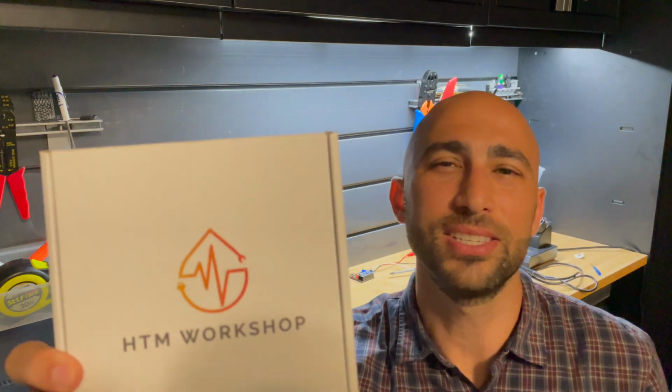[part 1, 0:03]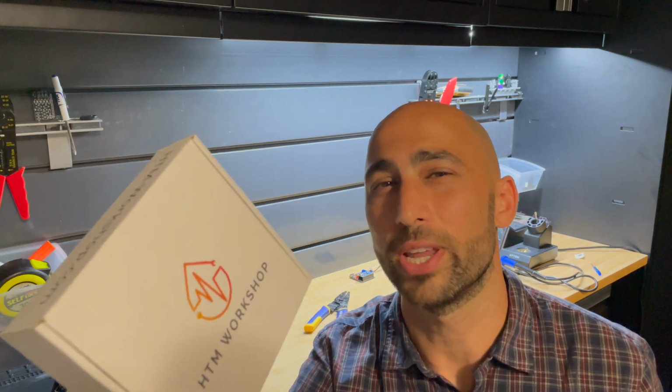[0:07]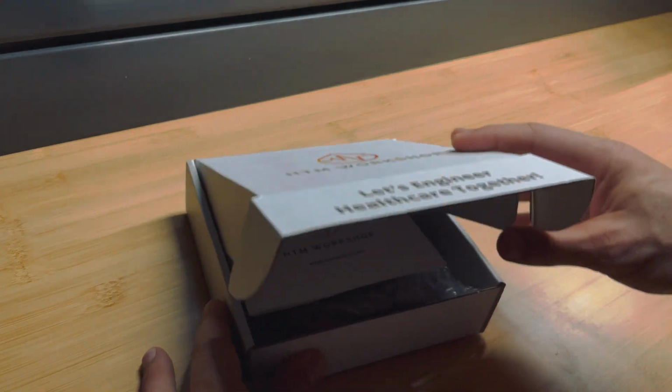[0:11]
Now in this video, we're going to go over what's inside your ECG simulator kit.
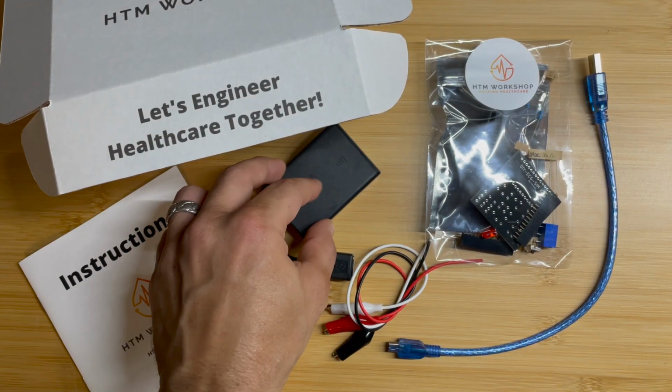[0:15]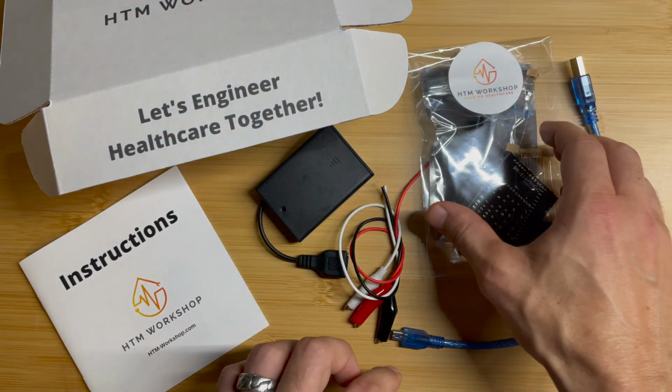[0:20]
Let's open this bad boy up and see what's inside. We have instructions, a portable USB power source, our alligator leads, a USB cable, and then we have the components to assemble our ECG simulator.
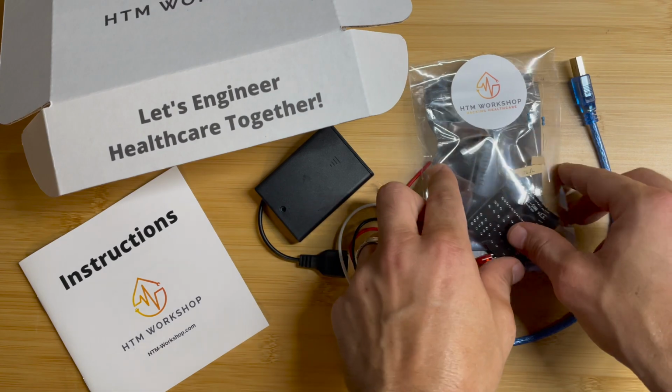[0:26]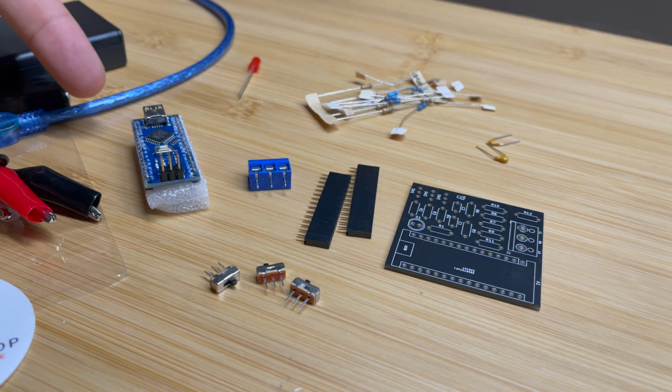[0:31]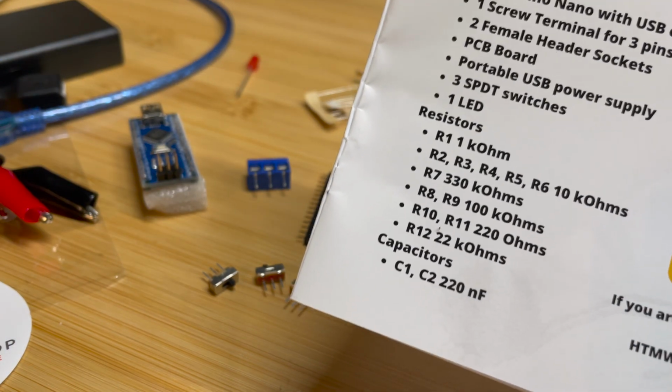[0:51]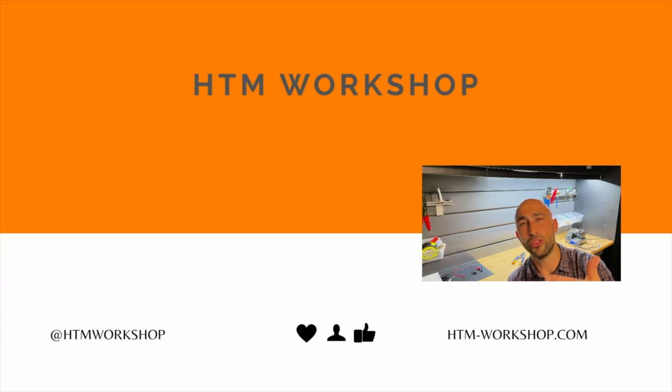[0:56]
Now let's take a closer look at the components inside our kit. Inside, you're going to find an Arduino Nano, one screw terminal for 3 pins, 2 female header sockets, your PCB board, your SPDT switches, 1 LED, all your resistors, and 2 220 nanofarad capacitors. Make sure you have all the resistors listed in your instructions. Make sure to check out our other video on how to assemble your ECG simulator.
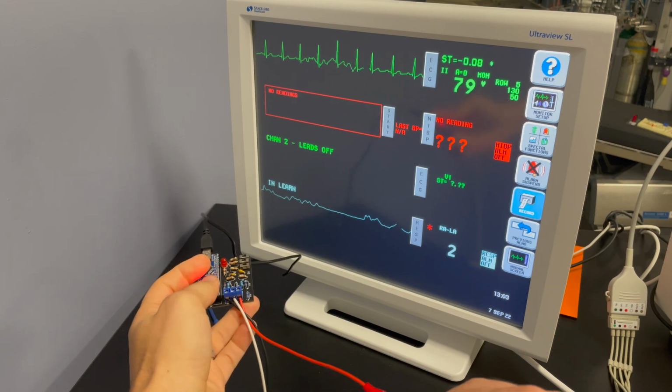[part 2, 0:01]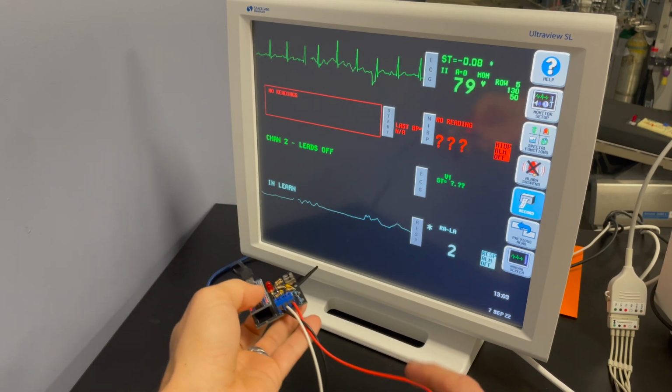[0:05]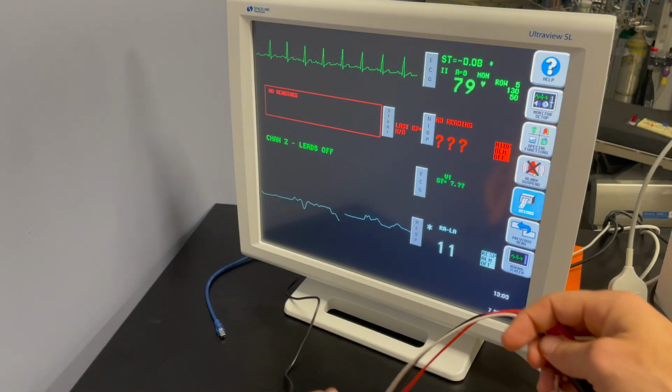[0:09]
Okay, assuming you've already installed and assembled your ECG simulator, and if you haven't, check the video out over here. But assuming you already did that, let's go ahead and talk about some of the things you can do with your ECG simulator. Right now we're generating a simple, approximately 80 beats per minute ECG waveform.
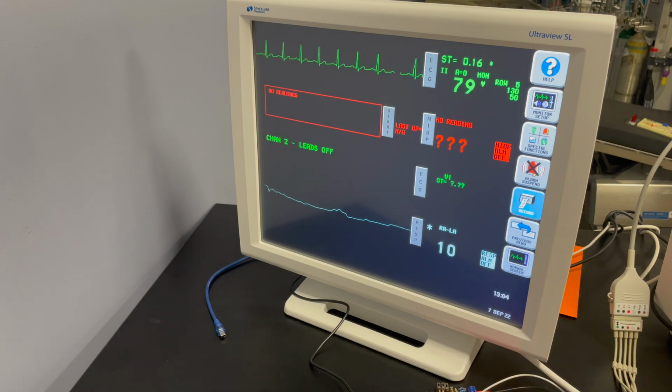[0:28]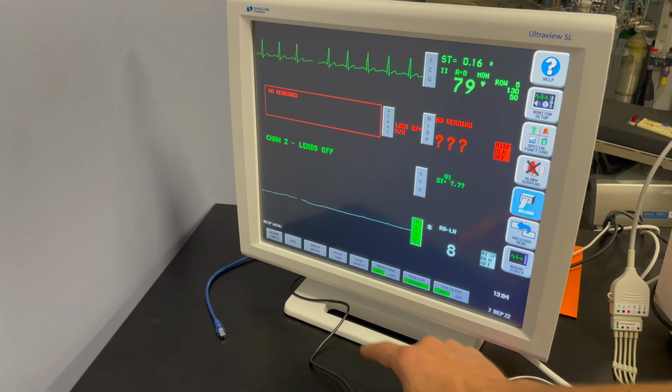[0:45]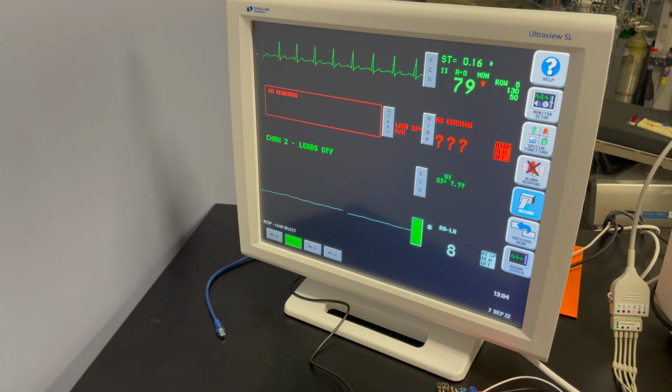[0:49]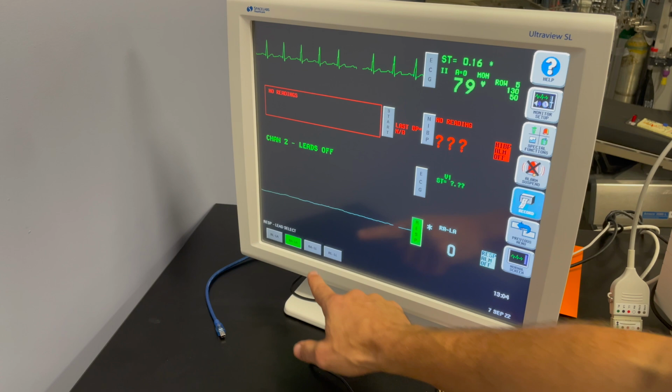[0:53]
Now, the respiratory rate down here, that's just reading some noise right now because I was moving around the cables. But if you want to measure the respiratory rate, you're going to have to make sure you select the correct leads. Depending on what type of patient monitor you're using, it's going to look a little different. So we're going to go into the respiratory settings, into lead select, and then we're going to select RALL.
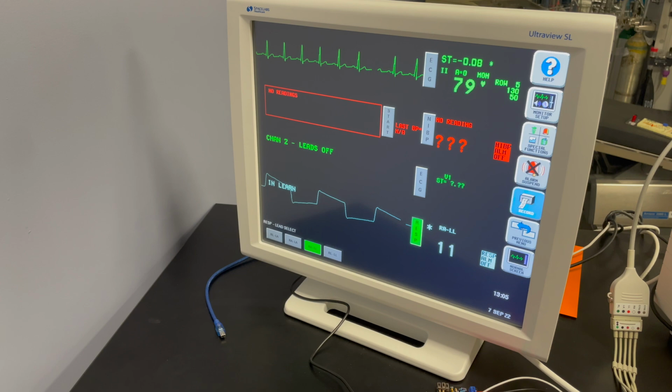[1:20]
After a bit, that's going to give us enough information to simulate the respiratory rate. So that's really important. The respiratory rate is only simulated between the RA and LL leads, so you're going to have to make sure you set up whatever device you're using so that that's correct. Different devices choose different leads to default to. Some Spacelabs monitors like this one don't default to RALL, but if you use the cubes, they do. It just depends on what type of patient monitor you're using, but most of the time you're able to go into the settings and select the correct leads.
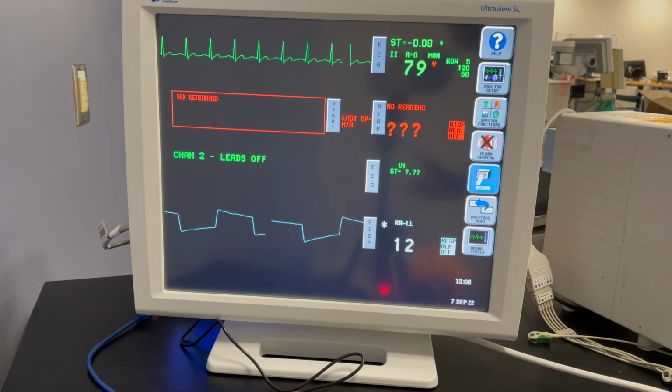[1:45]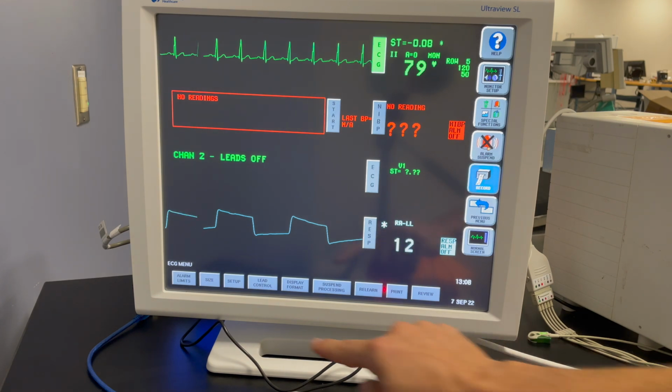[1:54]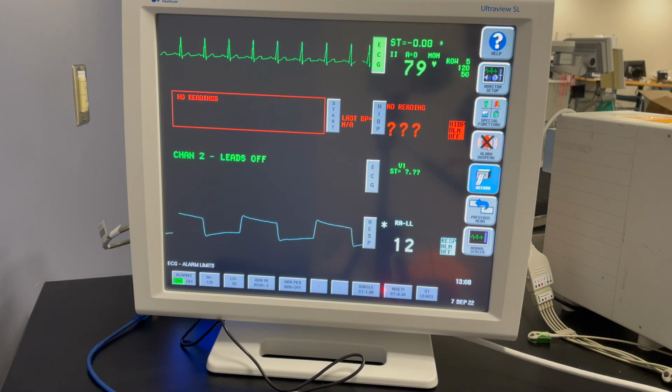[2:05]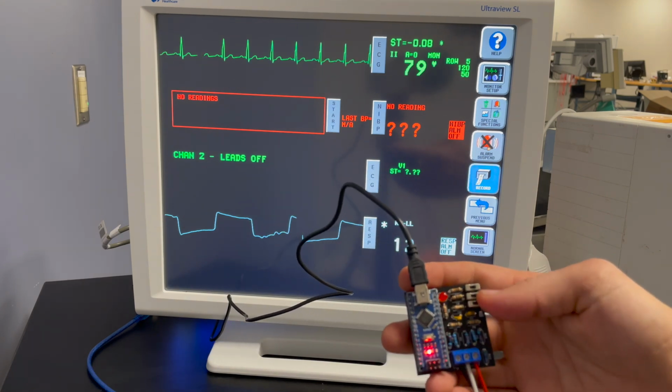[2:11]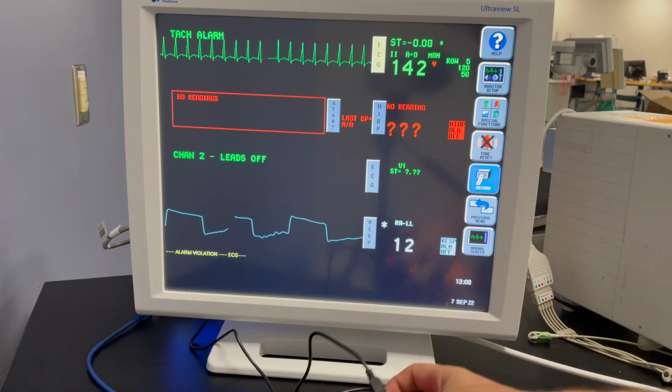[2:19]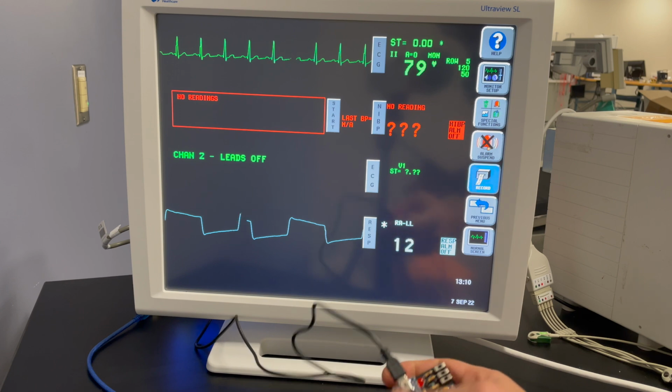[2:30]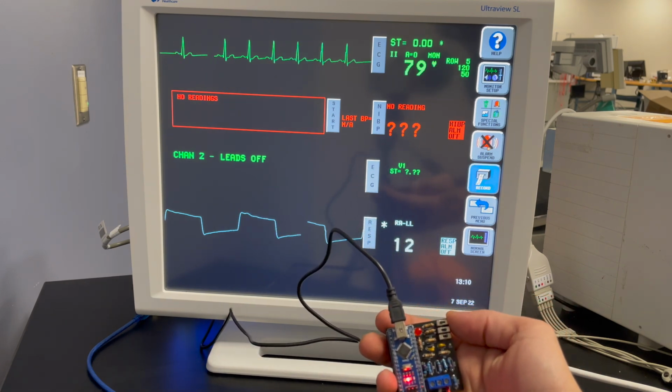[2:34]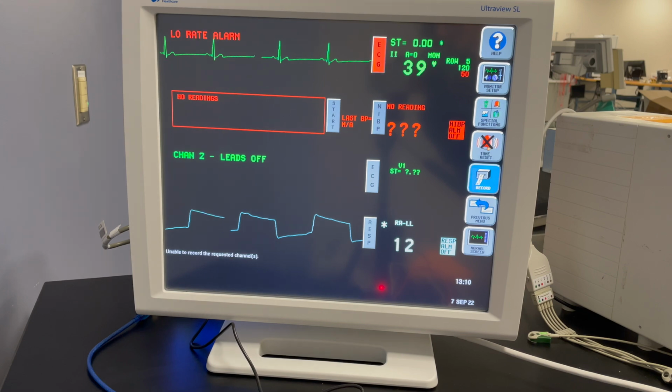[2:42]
Okay, now let's say we want to test the low rate alarm. We're just going to flip the first switch over. All right, and you can see that the low rate alarm successfully went off. There's a total of 8 different settings that you can have set with your ECG simulator. I'm just going to show you 2 more: the settings for VFib and tachycardia.
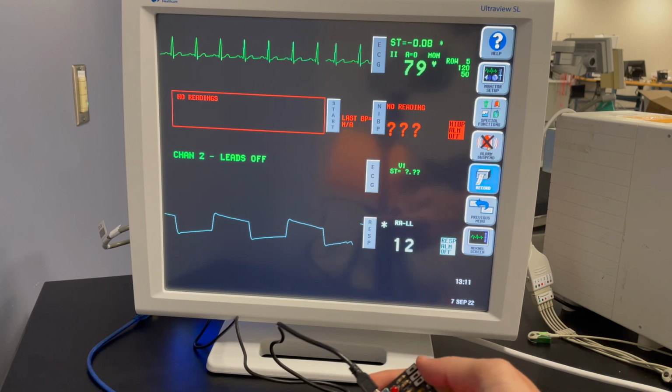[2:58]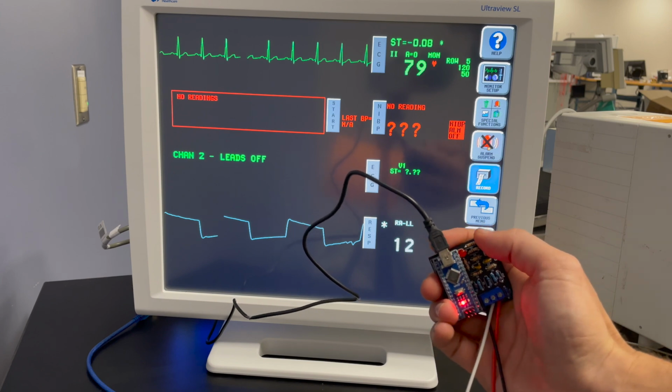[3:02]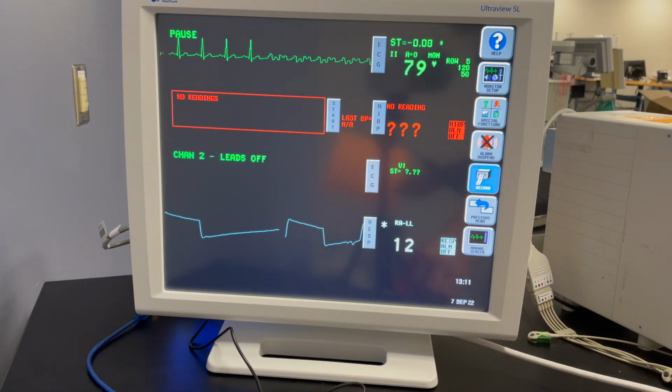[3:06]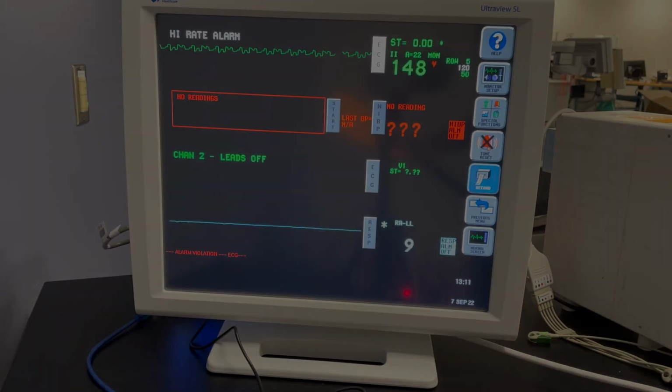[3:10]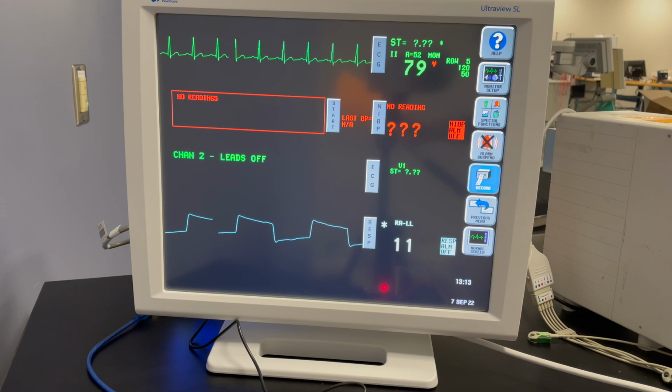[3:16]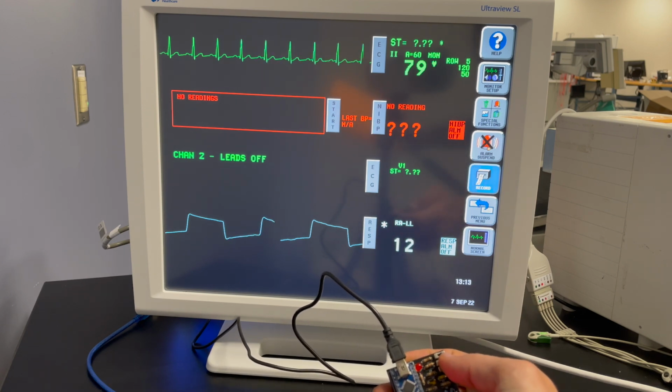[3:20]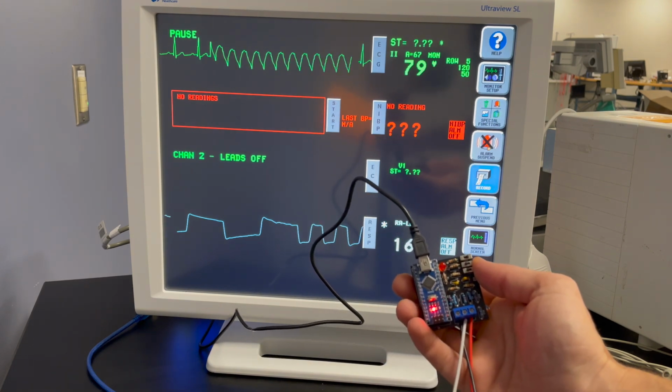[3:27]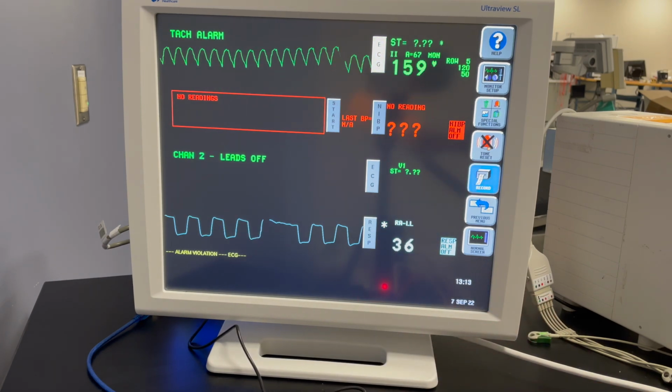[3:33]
If we set all of these toggle switches to the left side, we're going to simulate VFib. Now in this case, we're going to flip the bottom two toggle switches to the left in order to simulate tachycardia. And you can even see that the tachycardia alarm shows up. One thing you'll note is that different patient monitors have different alarm settings and different ways that they detect tachycardia and VFib. So you may get those alarms to throw, you may not. It's going to depend on how your monitor is doing that calculation, and it can be very dependent on the make and model of your patient monitor.
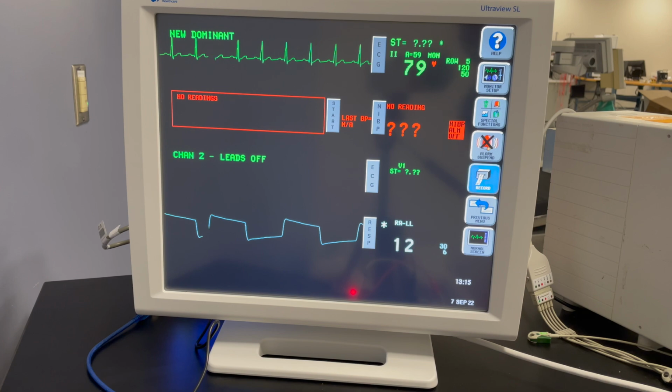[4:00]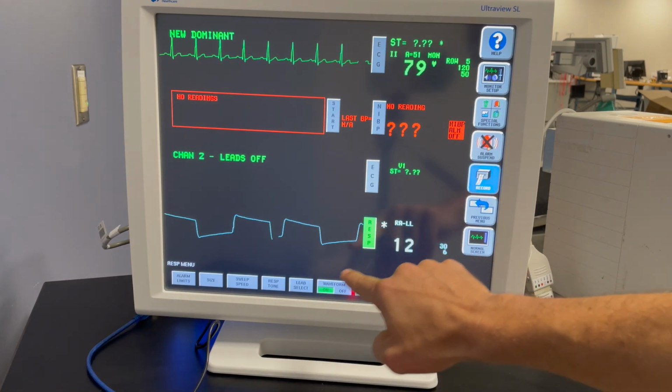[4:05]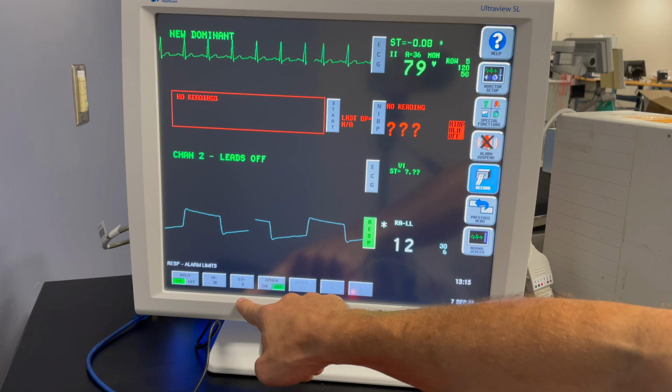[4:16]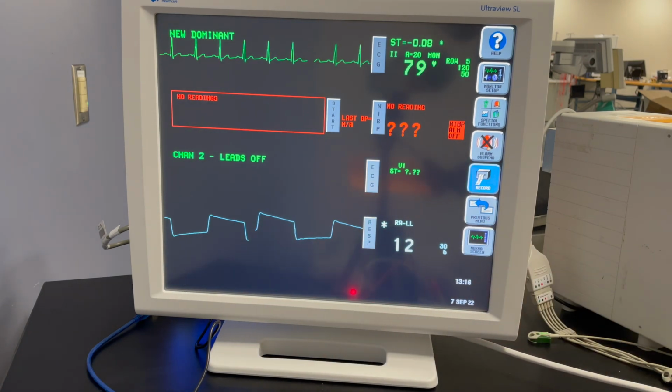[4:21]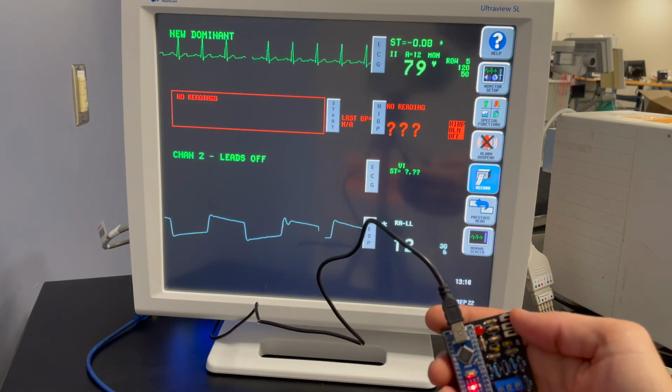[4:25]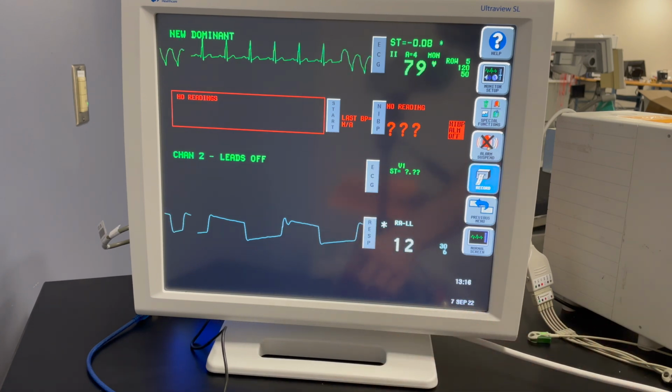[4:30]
Another thing you can do with your patient simulator is test the respiratory rate alarms. For the last couple of tests, I've actually had the alarms off. I just went ahead and turned them on. Now the high alarm is set to 30 and the low alarm is set to 6. If I go to my toggle switches and flip the bottom two over to the left, once again a simulation for tachycardia, you'll notice that the respiratory rate picks up.
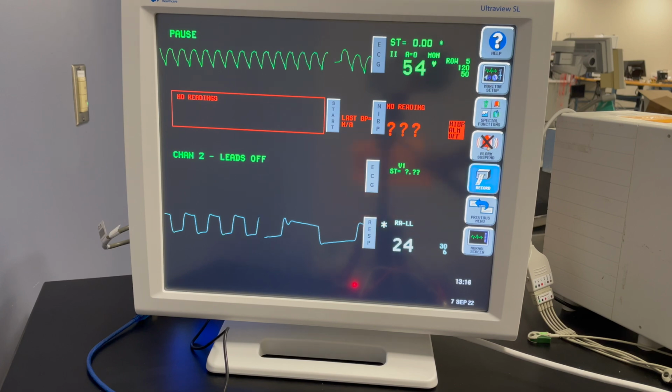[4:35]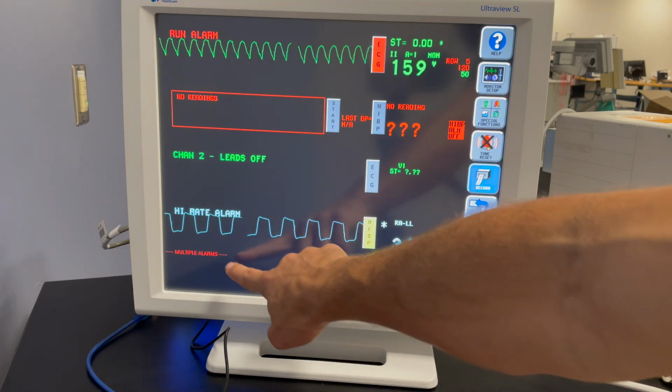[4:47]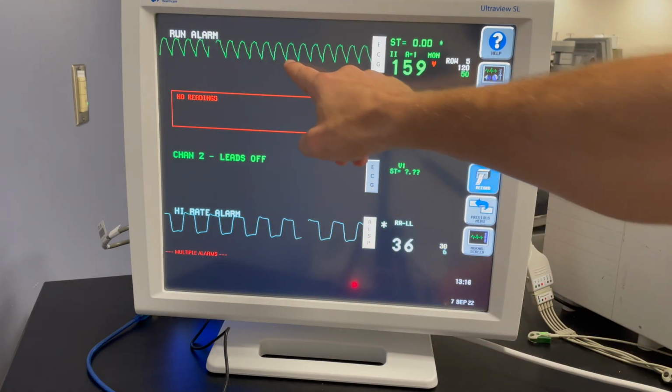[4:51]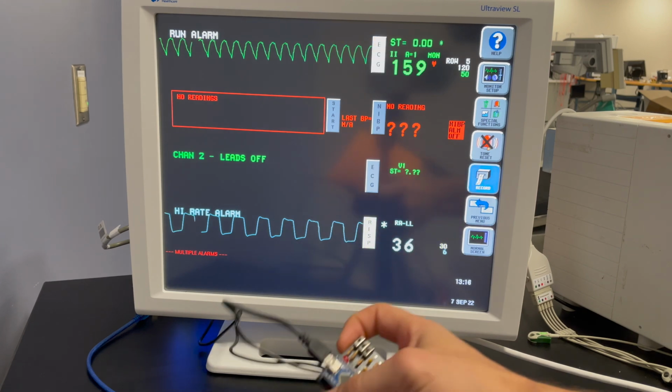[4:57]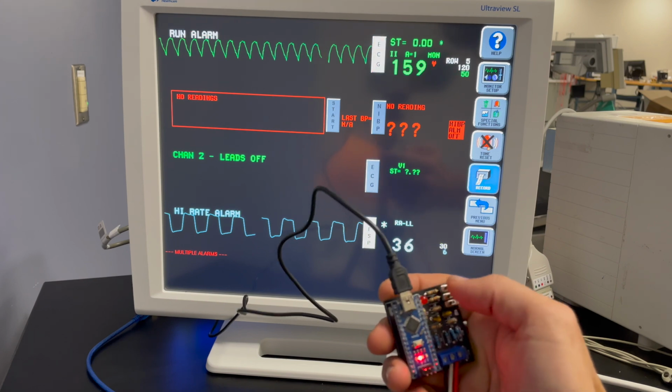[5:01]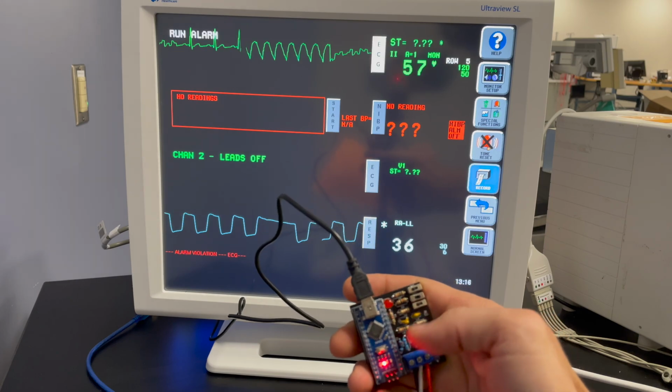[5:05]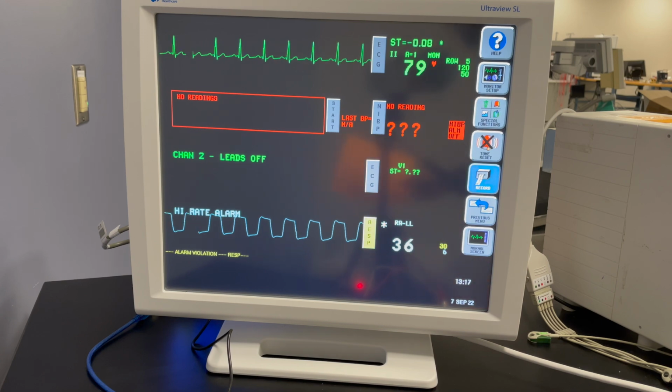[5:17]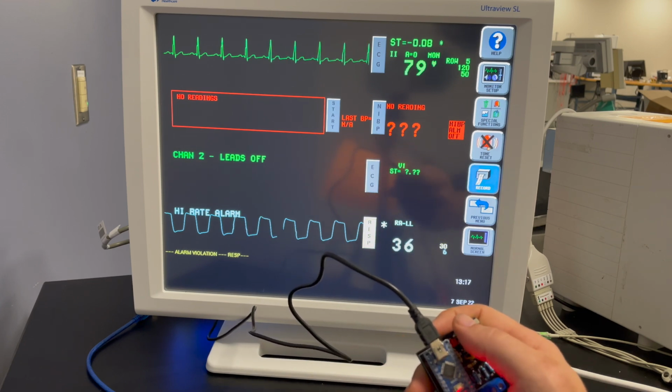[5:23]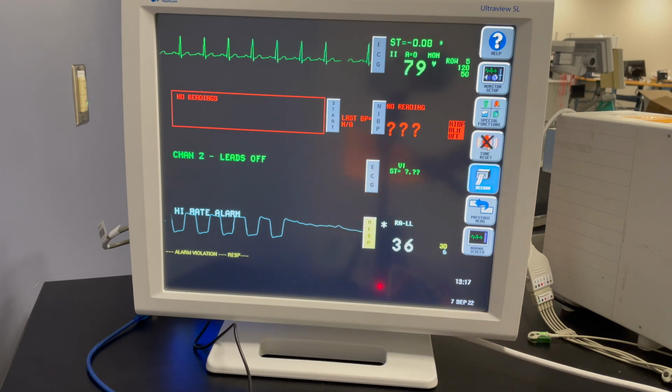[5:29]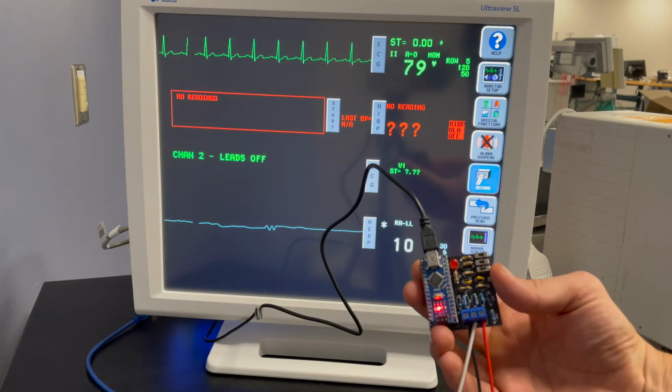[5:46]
Now, if we wanted to test the low rate alarm, the easiest way to do that is set your toggle switches to right, right, left. It does take a while for the respiratory rate to update its calculation, so you have to be patient. And there we go, the low rate alarm did go off. As far as I know, this is the only do-it-yourself ECG simulator where you can actually create multiple waveforms and test respiratory rate. We hope you enjoyed the project and let us know if you have any suggestions.
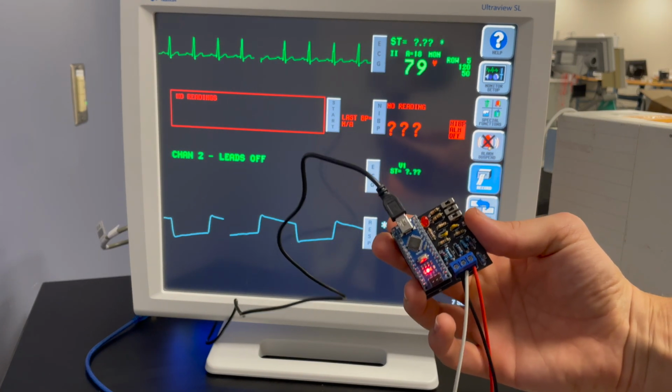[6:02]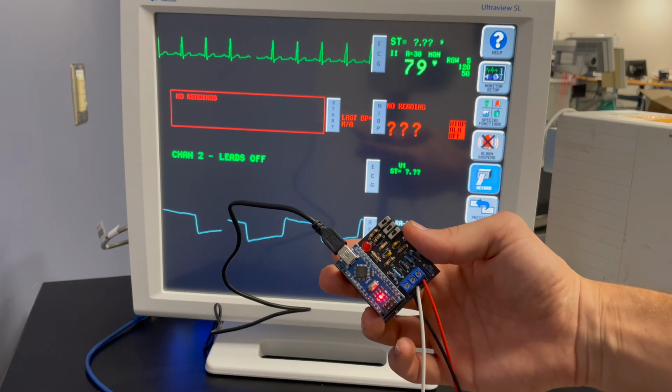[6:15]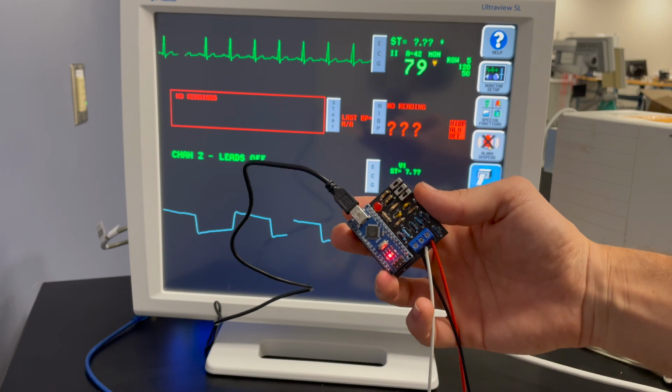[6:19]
Hopefully that gives you some of the basic things you can do with your patient simulator to test the patient monitor that you have. You can even write your own custom waveforms and your own custom heart rates by going into the code that we've made accessible. So feel free to change it around and experiment with different types of waveforms.
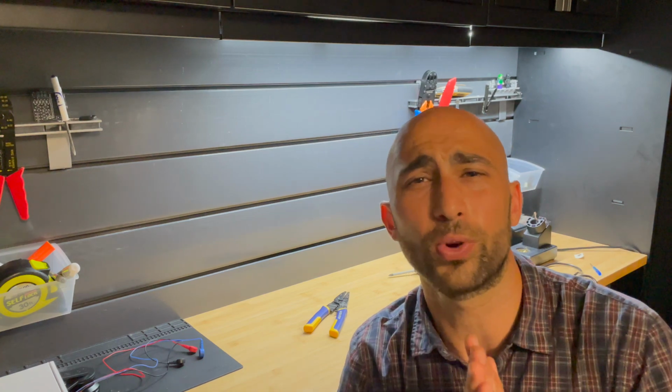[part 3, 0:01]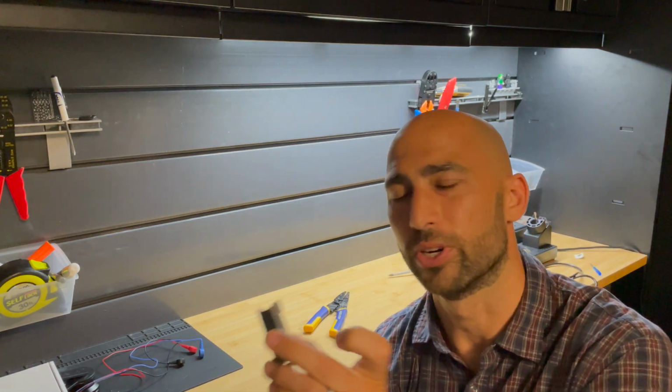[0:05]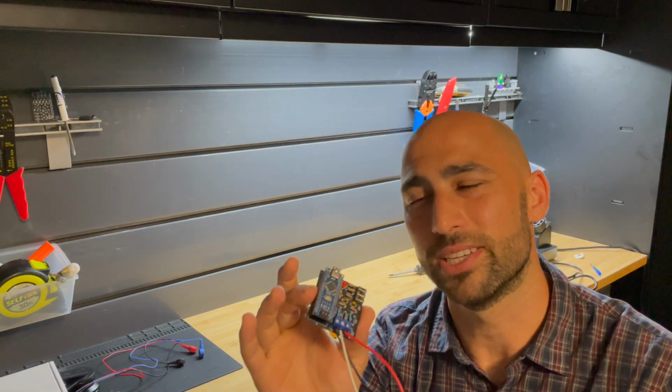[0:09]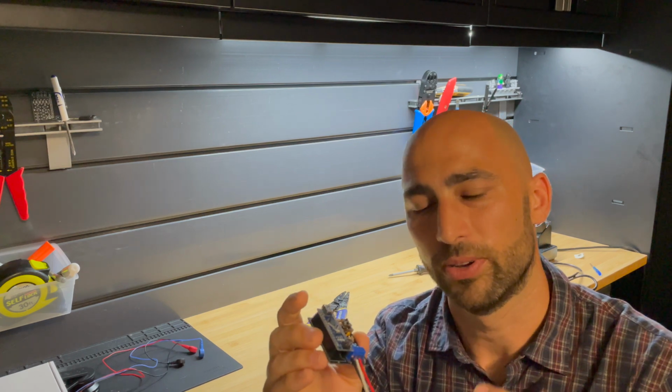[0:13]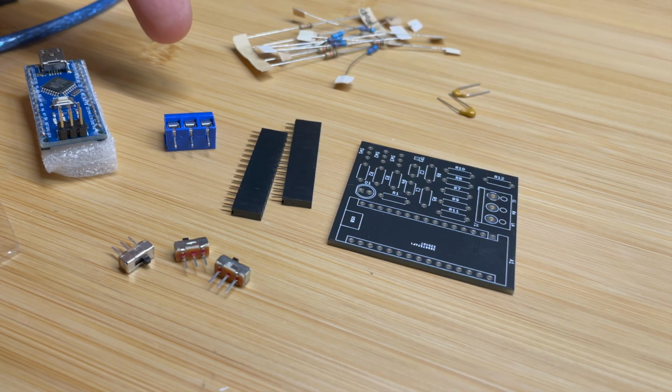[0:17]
All right, so in this video, we're going to talk about how to assemble and build your ECG simulator. What we'll talk about is how to solder this onto the PCB board, how to use your Arduino Nano, and how to make connections with these alligator clips. Before we get started, you want to make sure you have all your ECG kit components.
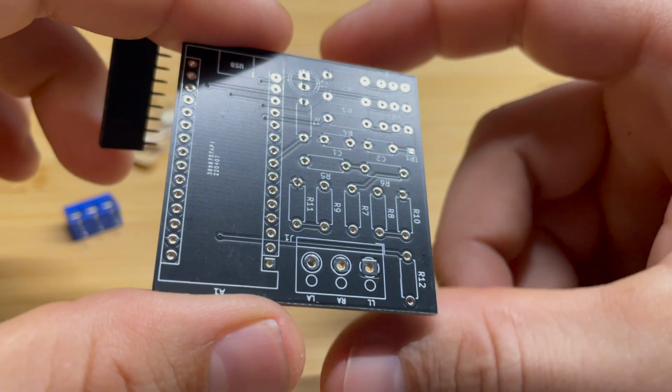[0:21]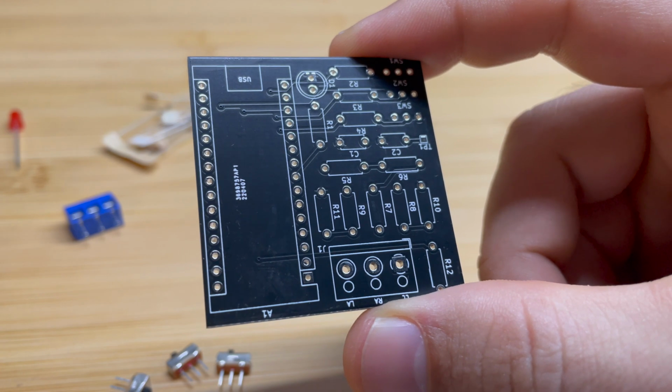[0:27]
The next step is you want to solder your components onto the PCB board. Now, if you're not familiar with soldering, please check out my video that talks about how to solder. This is going to tell you everything you need to know to be successful in soldering. But even if you're not very good, even if this is the first time you've ever soldered something, I have seen so many people complete this project no problem, even with really terrible soldering skills. So this is a very forgiving soldering project.
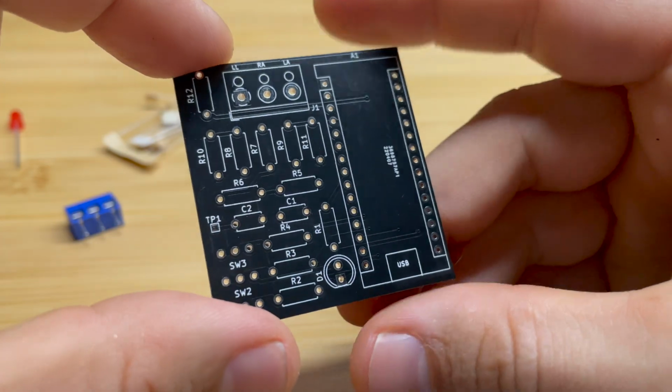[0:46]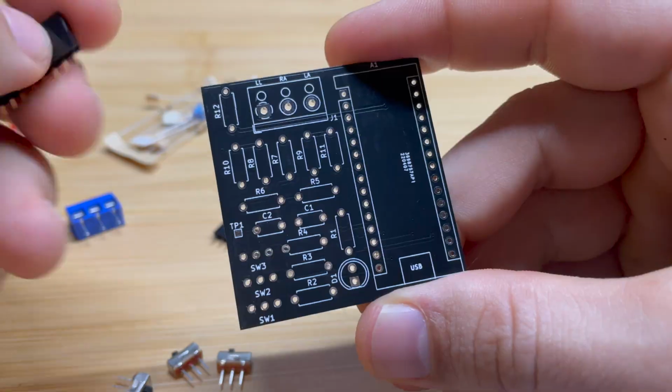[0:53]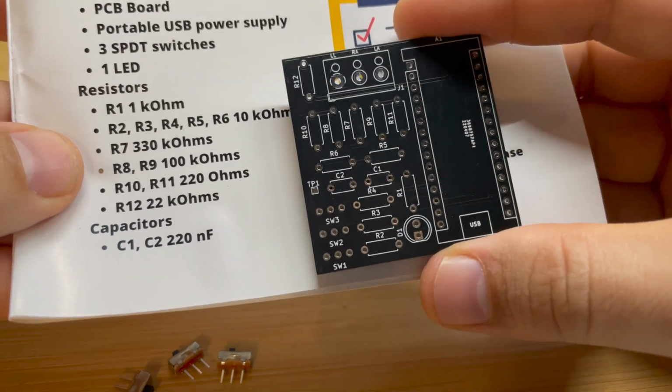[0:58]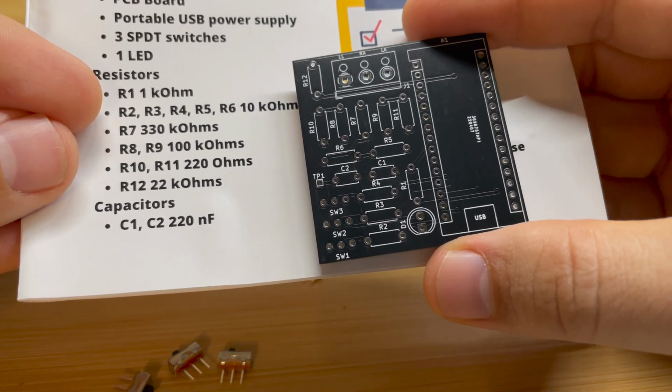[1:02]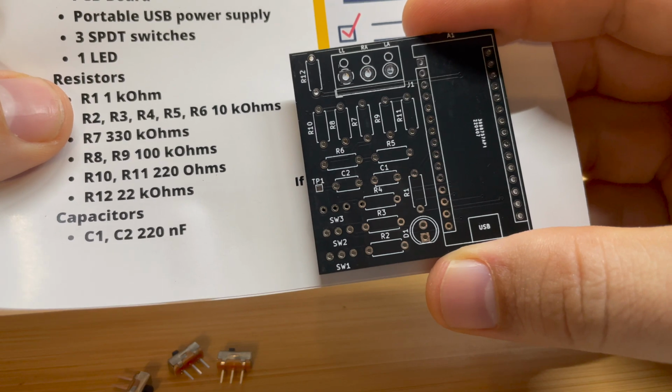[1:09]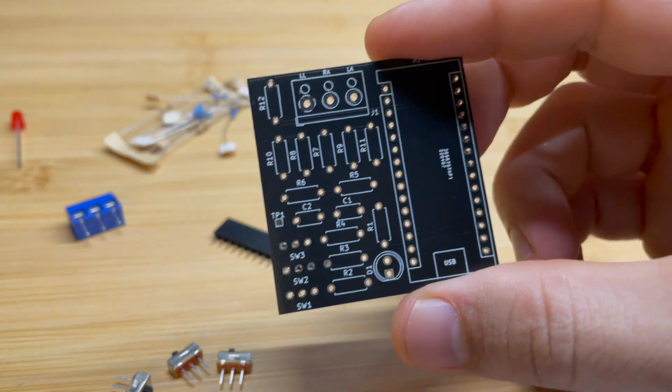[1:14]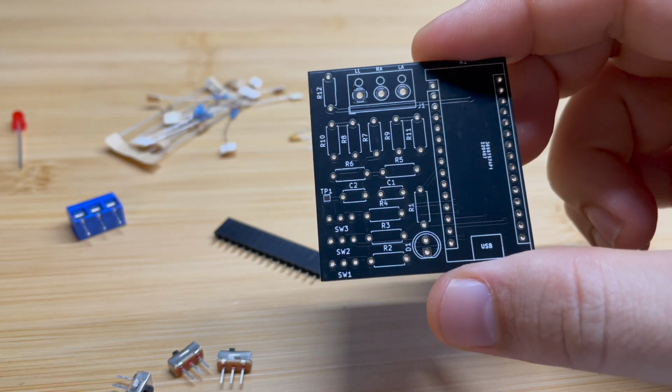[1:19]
As you're looking at the board, you want to take a look at all the components that you have labeled. And that's going to tell you where each component needs to go. So if you take a look at the manual, each resistor has a corresponding value. R1 is the 1 kilo ohm resistor, R2, 3, 4, 5, and 6 are 10 kilo ohm resistors, and so on and so forth. So you want to make sure that you match the resistor label with the correct resistor value. And those can be seen on there. C1 and C2 are the capacitors, and there's only one size capacitor, so that's not hard.
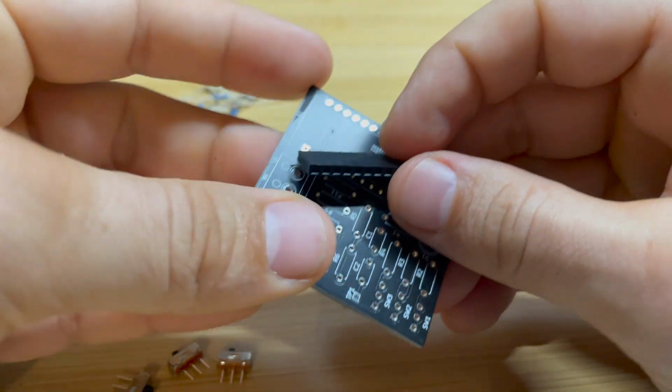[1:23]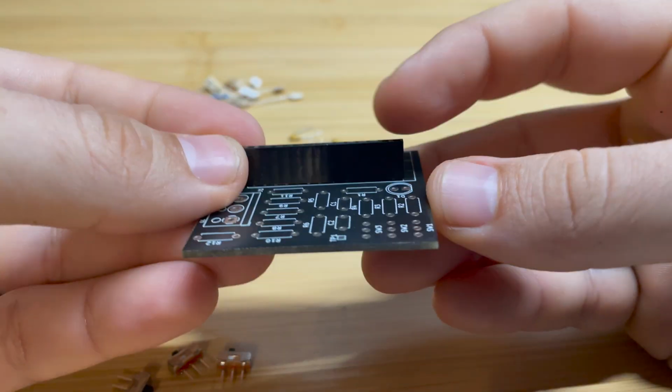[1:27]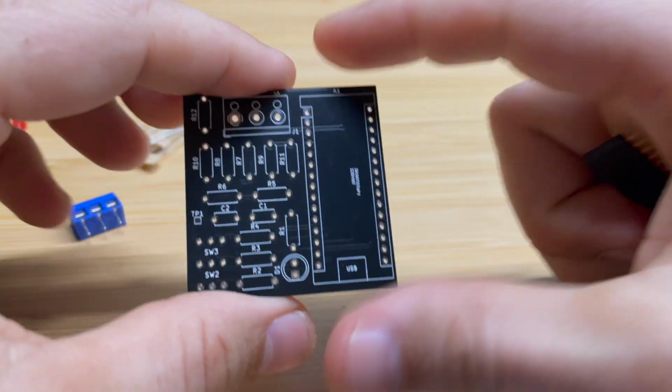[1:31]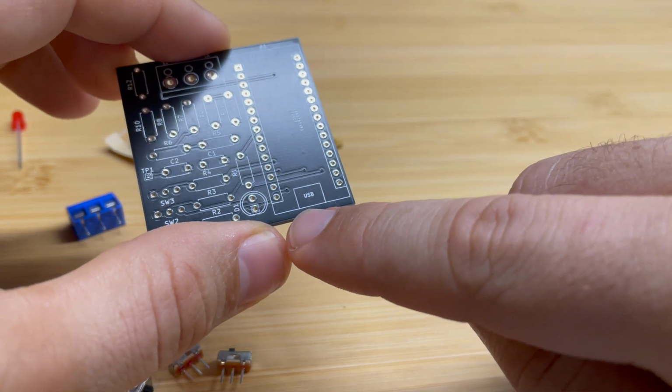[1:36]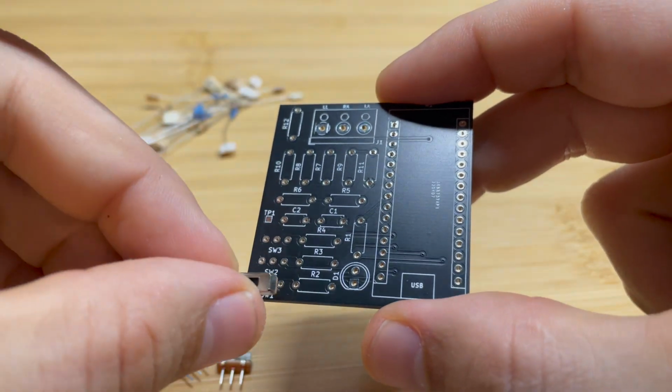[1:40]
The female header pins are going to go in here before you put on the Arduino. That's just so that you can take out the Arduino Nano and use it for other projects. These are completely optional. The next thing is make sure when you put your Arduino in, you put it with the USB port on this side. The SPDT switches are completely reversible, so it doesn't matter which way you put these in.
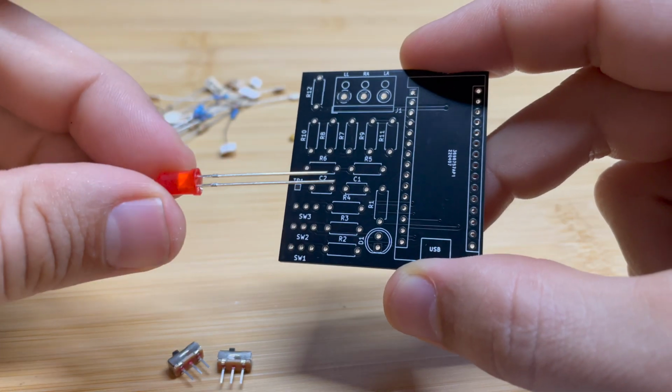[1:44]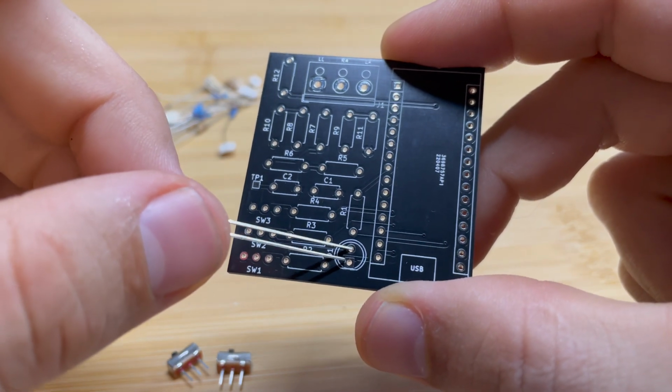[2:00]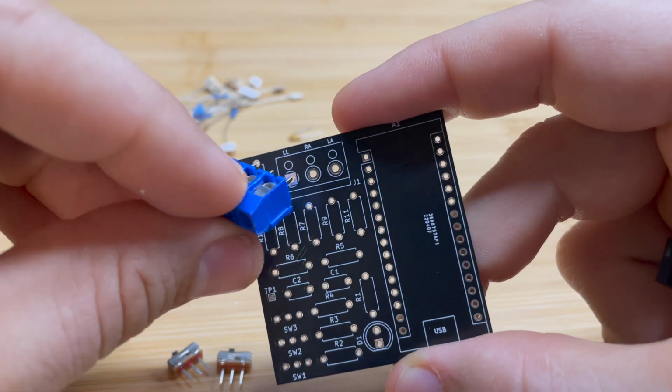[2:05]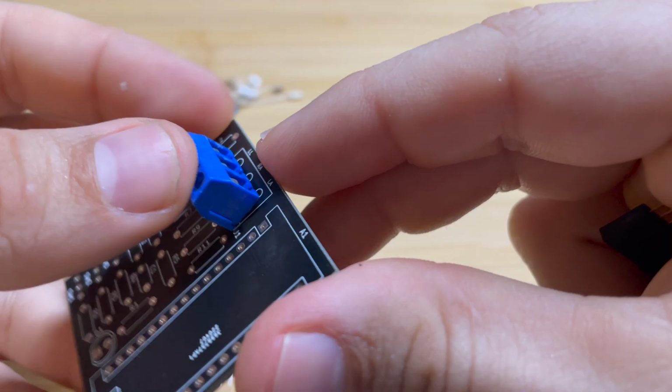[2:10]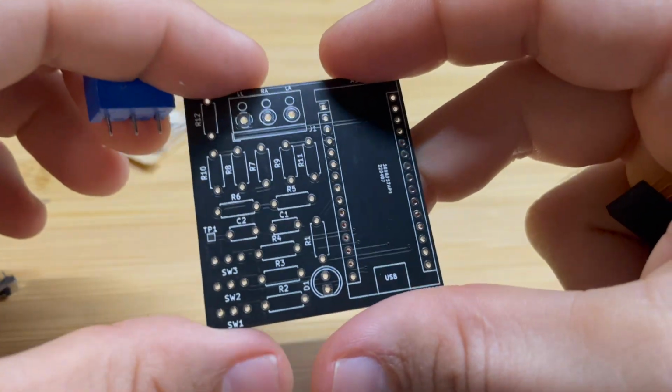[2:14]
Now with the LED, this is one of the few things on the board that has to be put in the correct orientation. So when you put this in, you want to look for the leg that is the small leg on your LED, and you're going to put that in the square pad on your PCB board. Then when you're using your 3-pin screw terminal, you're going to want to put that so that it is oriented in this direction. That way you can easily connect the leads into this location here. So once you understand the orientations of where things go on the board, it's just a matter of soldering this thing together.
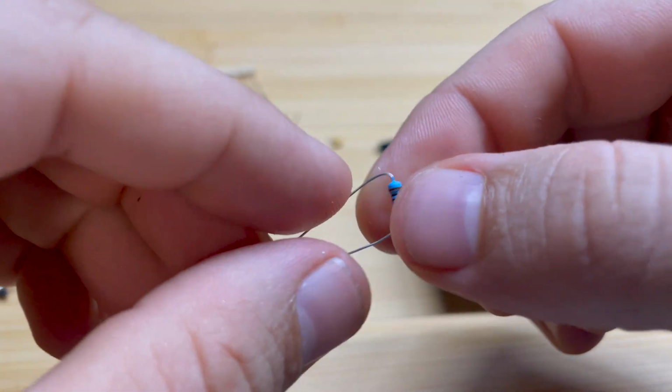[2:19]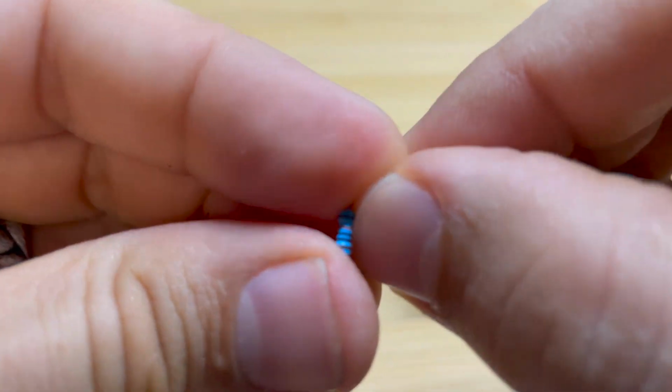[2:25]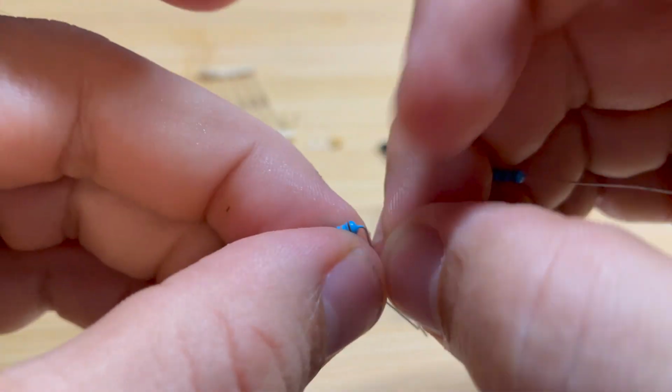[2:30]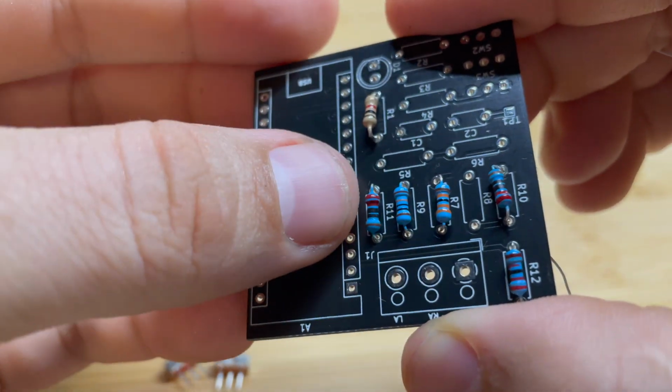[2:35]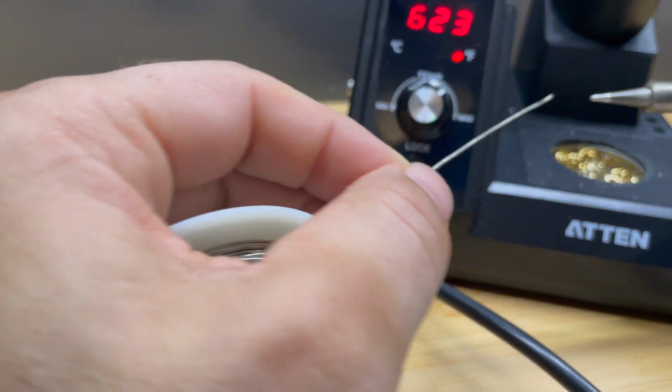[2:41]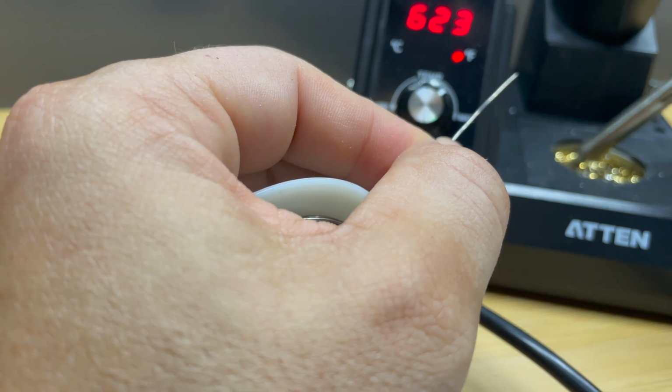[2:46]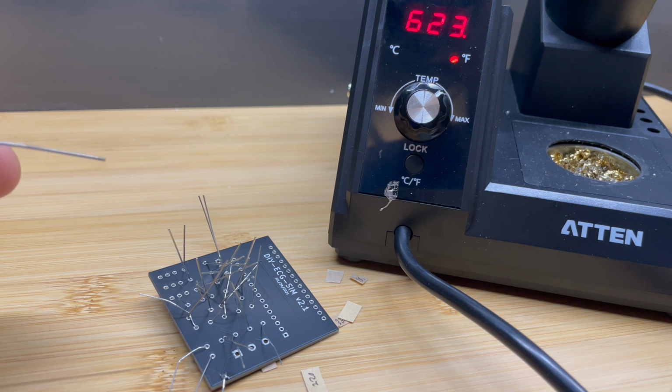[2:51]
Now, a little trick when you're putting resistors in there, what I recommend doing is bending these resistor legs as much as you can near the resistor. That way they fit well onto the footprint of your board. Just like that. Just a quick reminder before you start soldering, you want to make sure you tin your tip a little bit. So melt a little bit of solder on there, get it nice and shiny, clean it off, and you should be good to go. I have my iron set to around 623 right now, but that's going to depend on the type of tip you're using and the type of solder that you're using.
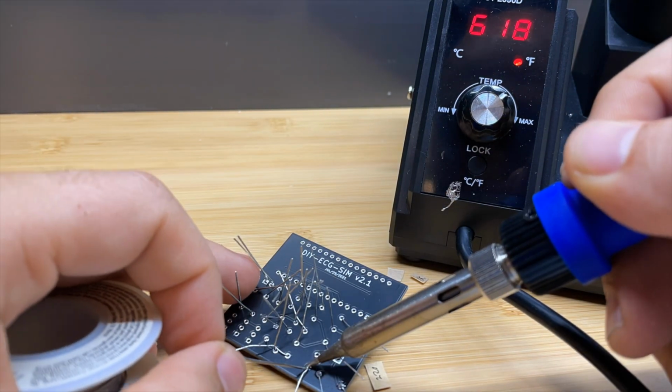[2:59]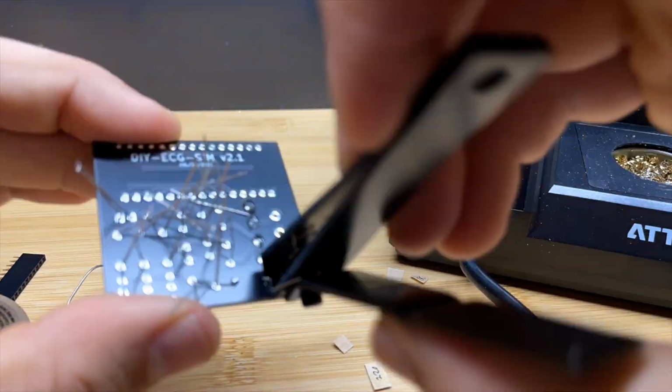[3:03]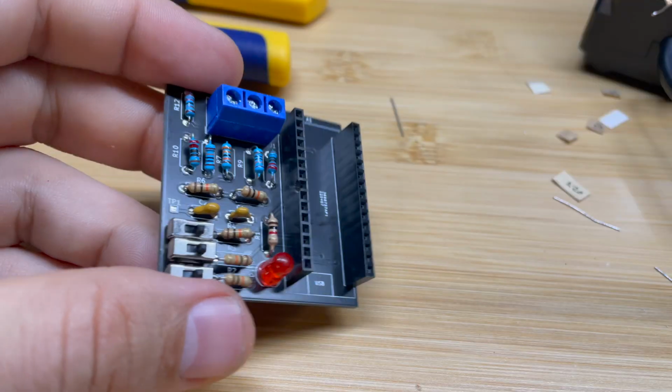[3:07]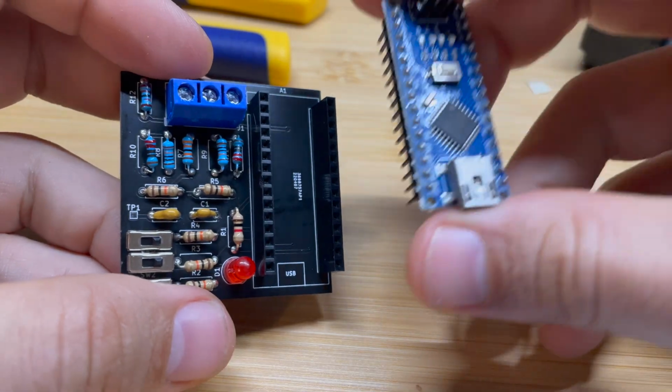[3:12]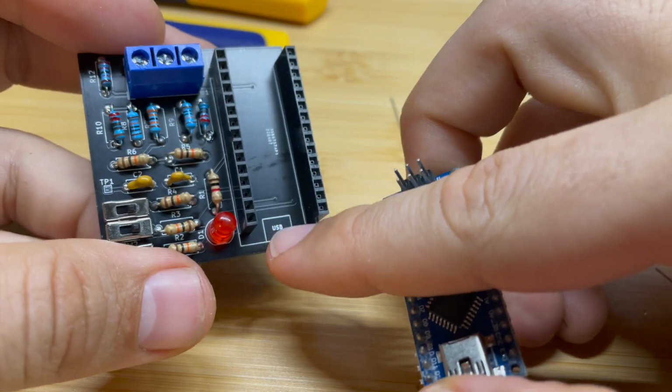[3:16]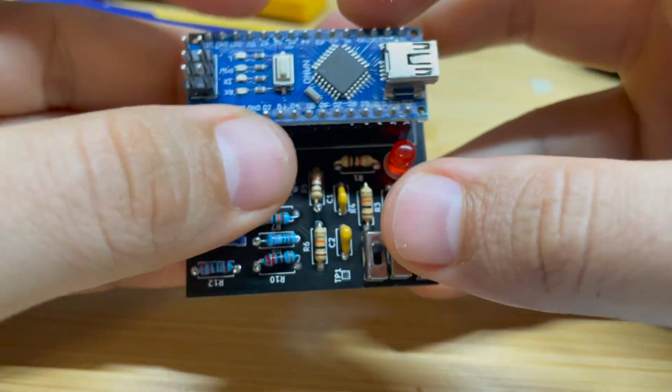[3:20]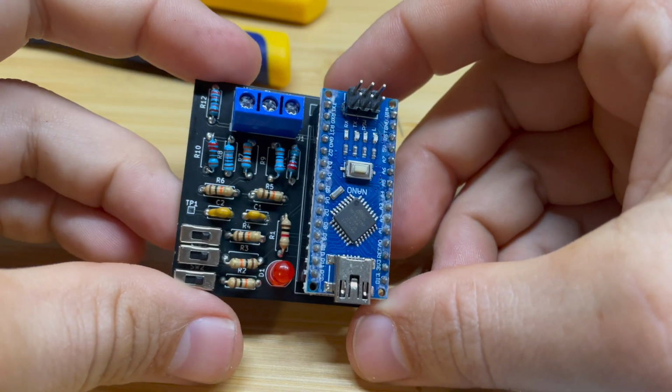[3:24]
So now you want to get to work actually soldering each of the legs. Every once in a while, you're going to want to come in and trim those so that you can give yourself some more space to solder. Once you get all those components soldered onto the PCB board, you can go ahead and put your Arduino in. Make sure the USB is obviously facing down in this case. So you just want to match up the pins. Now, once your Arduino's in there, the next step is to get your leads connected.
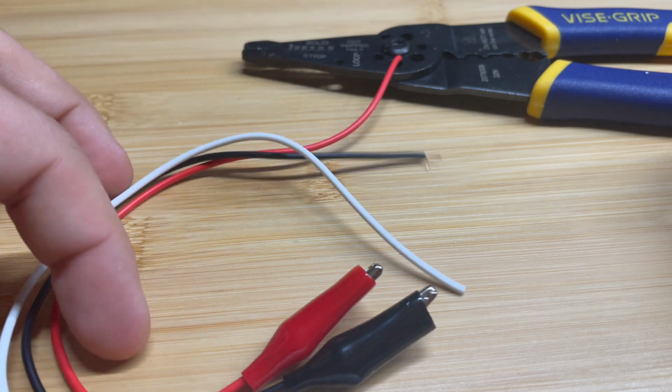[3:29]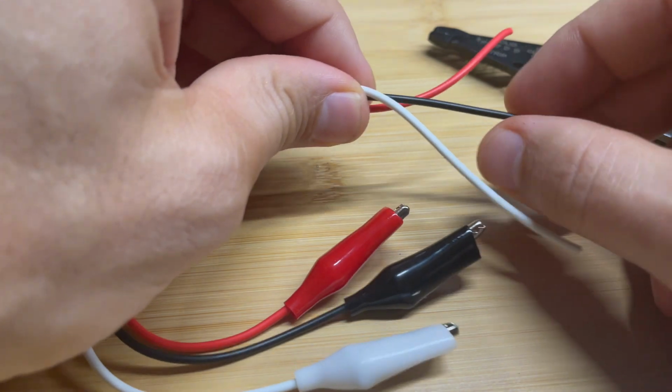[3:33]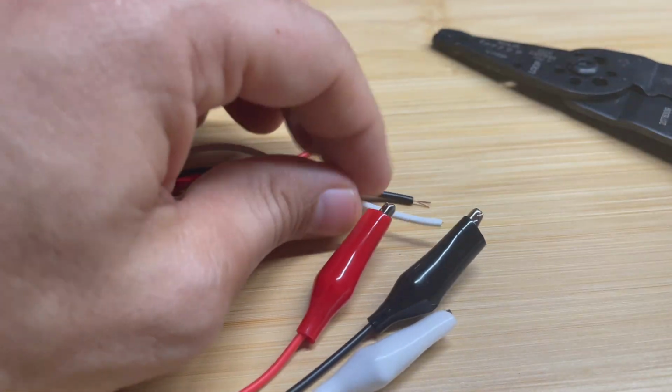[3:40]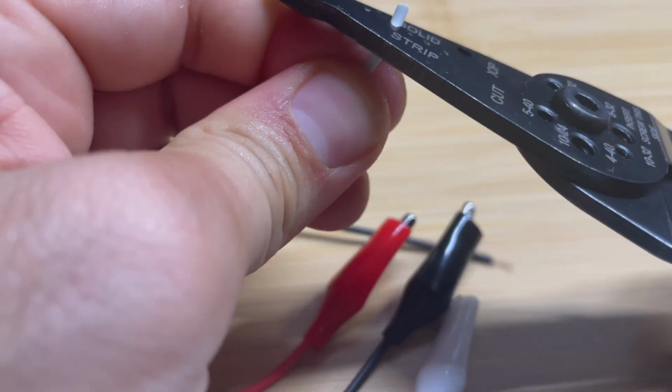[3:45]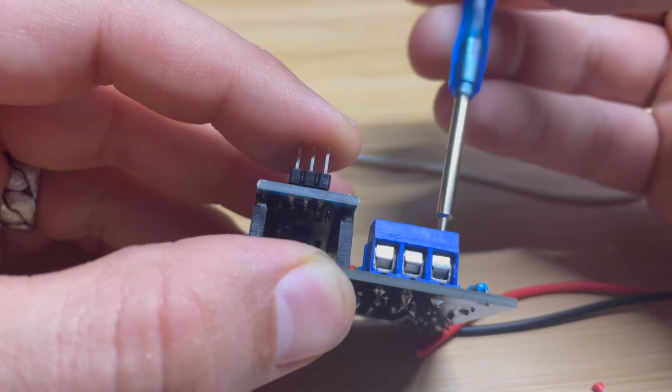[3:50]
Okay, so I have my three leads right here. I have a white lead, a red lead, and a black lead. What I need to do is go ahead and make sure that the wires are properly stripped at the end. So what I want to have is a little bit of conducting wire exposed on each of these leads. So you want to take your wire strippers and go ahead and strip off a little bit of the insulation from each of your wires. Okay, the next step is to go ahead and screw these counterclockwise, open them as wide as they can go. That way it's easy to insert all of the lead wires.
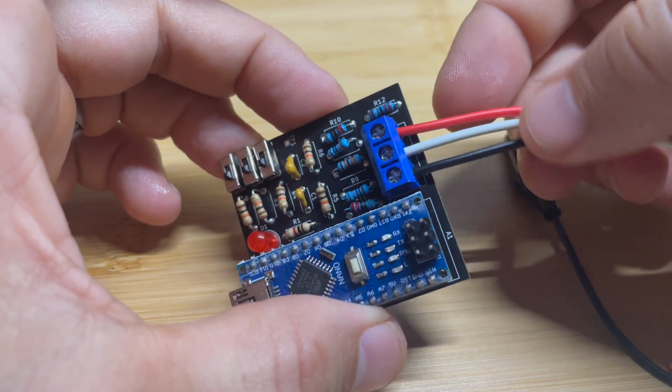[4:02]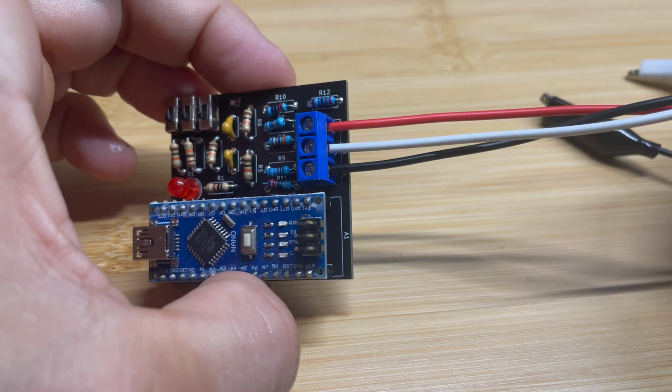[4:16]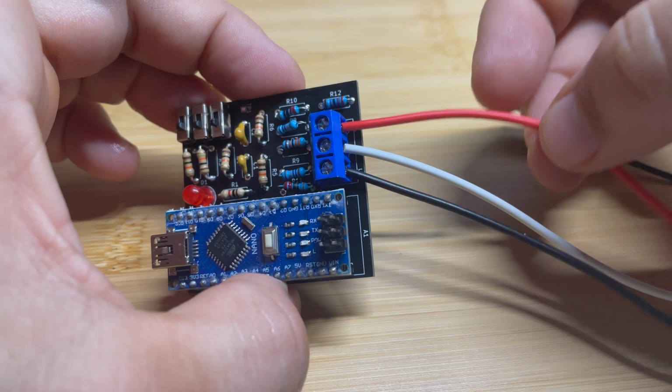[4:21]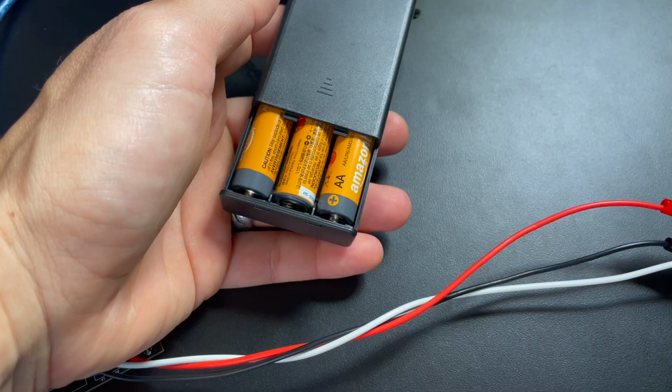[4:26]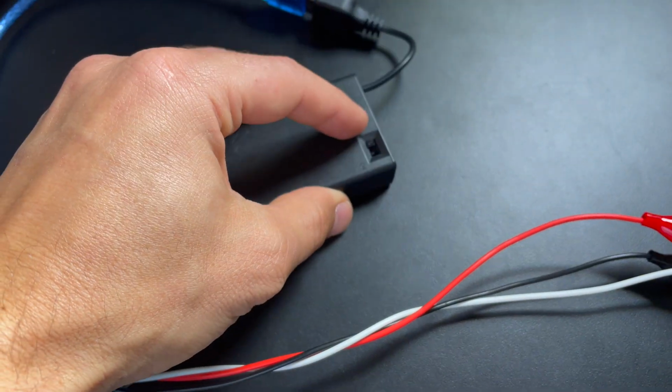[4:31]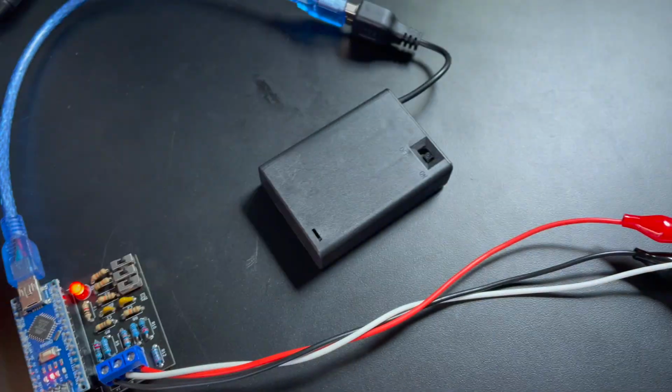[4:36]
If you want your ECG simulator leads to match what's going to be on your patient monitor, you're going to want to make LL red, RA white, and LA black. At the end of the day, obviously the colors of the wires don't really matter, but this will help you keep track of which of your ECG simulator leads should be attached to your patient monitor leads. Once you install some batteries in the portable USB charger and turn on the toggle switch to on, you will see the LED start to blink at the set heart rate of your ECG simulator.
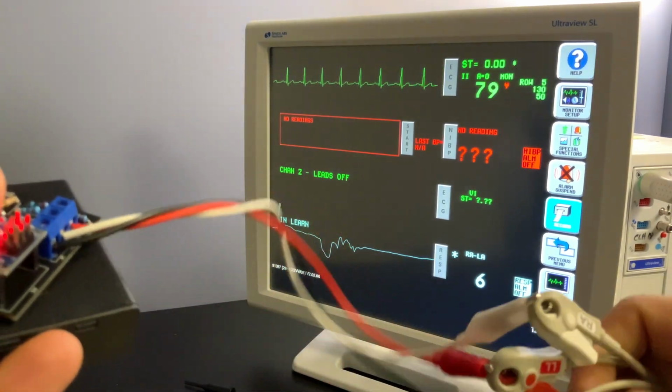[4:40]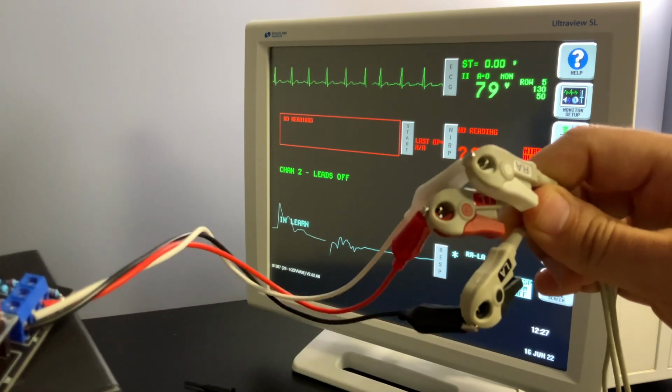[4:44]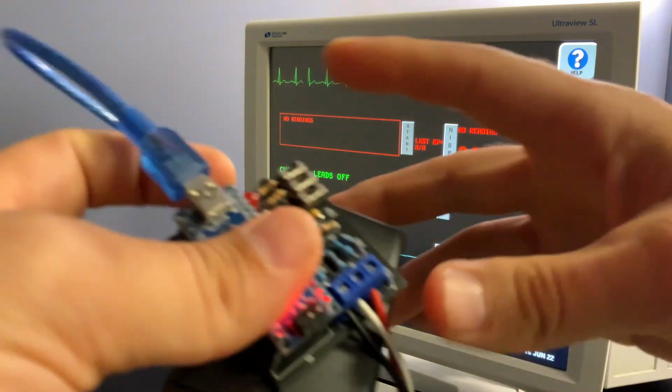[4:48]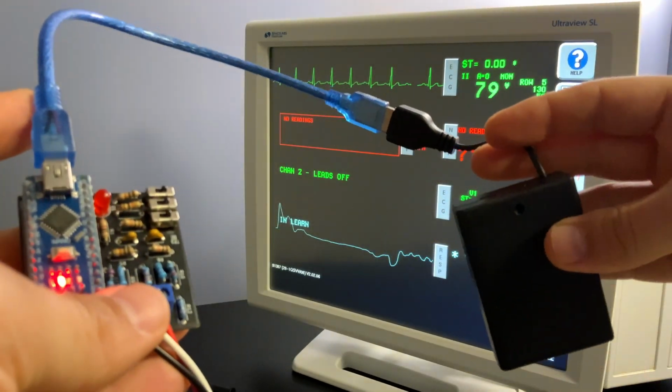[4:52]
Once your ECG simulator is ready to go, it's time to hook it up and connect it to your patient monitor leads. Once you connect the patient monitor leads in the same colors as your ECG simulator leads, you should be picking up signal on your patient monitor. Now, if you want to learn more about the different functions of your ECG simulator, check out our other video on how to use your ECG simulator.
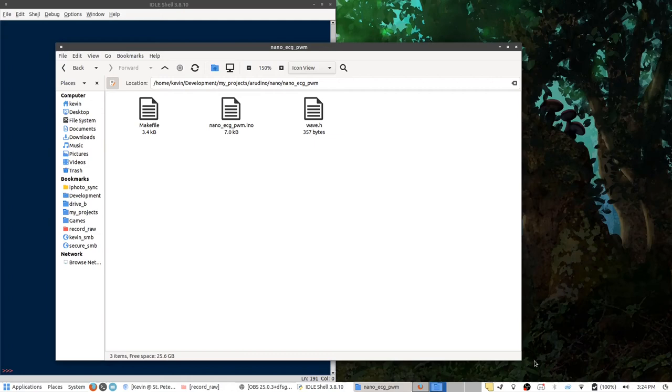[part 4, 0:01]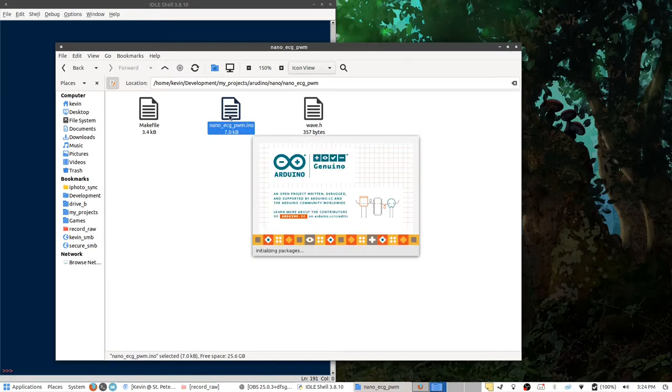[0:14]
In this video, I'd like to go into showing you how to create a custom waveform for the ECG simulator. Firstly, when you open up the folder that contains the project files, go ahead and open up the nano ECG PWM INO file. This should open up the Arduino editor.
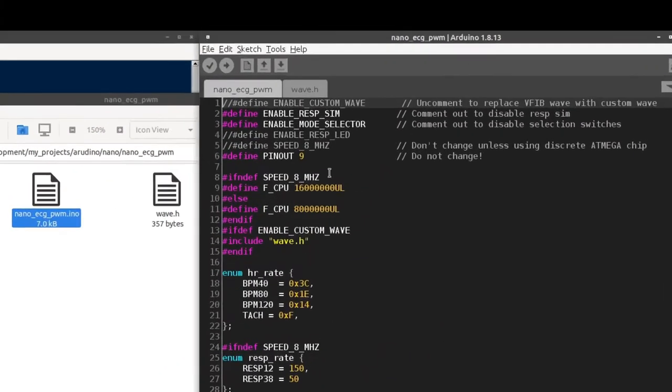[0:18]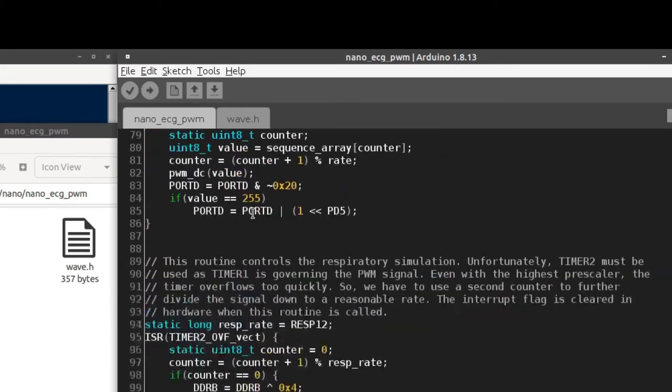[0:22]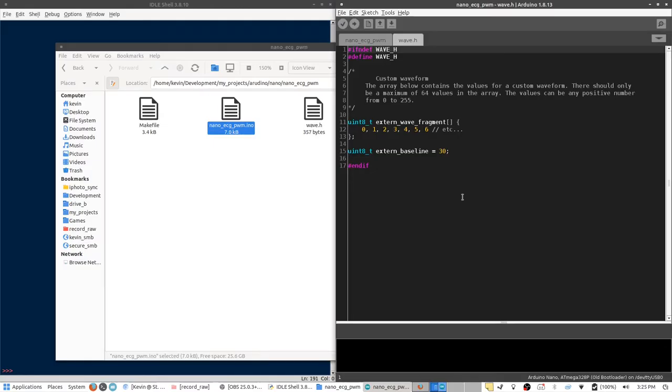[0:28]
Here you'll see two different tabs. There's the nano ECG PWM source file, which is the main program file. And the next tab is a wave.h file. This wave.h file is where we're going to put our custom waveform. In this file, there are two separate variables. First is an array that will contain our waveform, and the other is the extern baseline.
The waveform can be up to 64 values in length. All the values need to be between the numbers 0 and 255. You can use less than 64 values, just know that any value you don't enter is going to be replaced by whatever is in this extern baseline variable. So for example, if I just left this as it is, it would go up from 0 to 6, and then all the remaining numbers in that array will be automatically set to the value of 30.
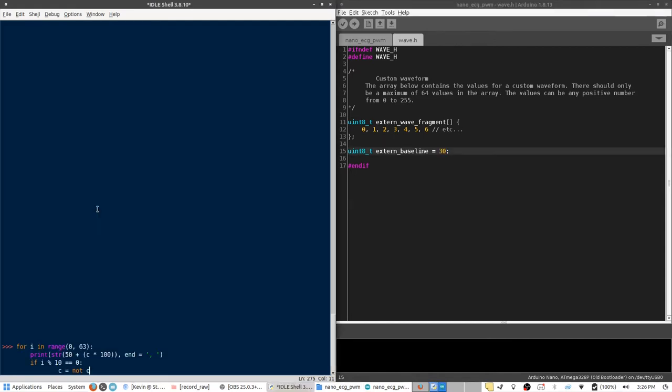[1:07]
There are a lot of different methods for creating a waveform. When I was initially designing the waveforms for the stock ECG simulator, I pretty much just eyeballed it. I created the waveforms in Excel and then ported them over into the program. So the values you see down here in this NSR fragment, those make up the QRS complex of a normal sinus rhythm. So for this example, I'm going to create a small script that will generate a square wave.
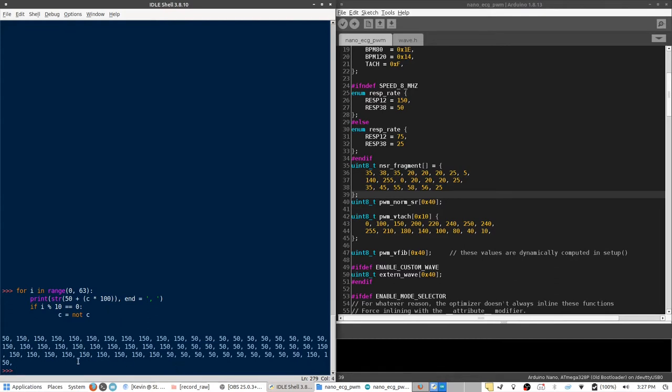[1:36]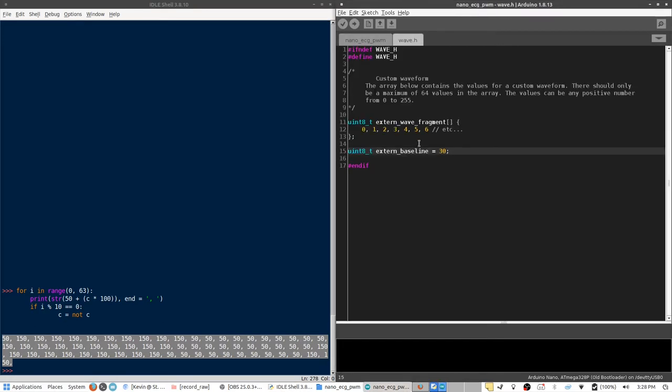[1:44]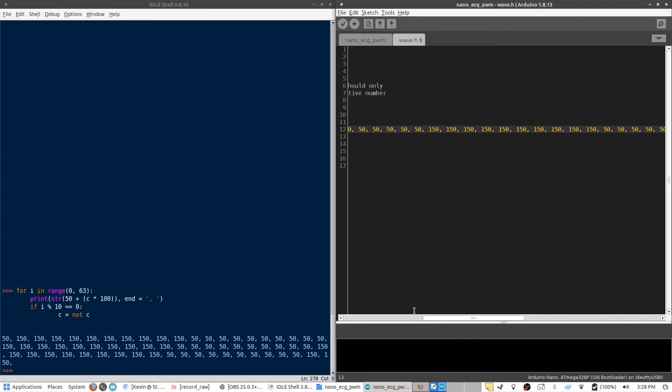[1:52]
And from here, I'll just copy the values that have been generated and paste them over into the wave.h file. I'm going to overwrite everything that's in here and paste in the values. Now, if I go back here, and I'll remove the first value, and there we go. So now I have the extern wave fragment set up with a square wave. Because I made the baseline of this wave 50, I'm going to also change this variable down here to 50. So any values that aren't entered in will be automatically replaced with 50.
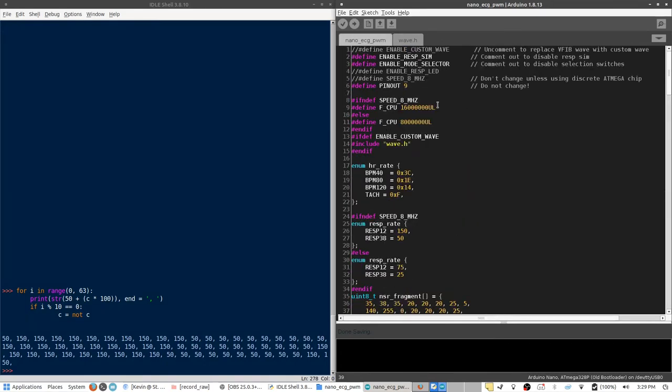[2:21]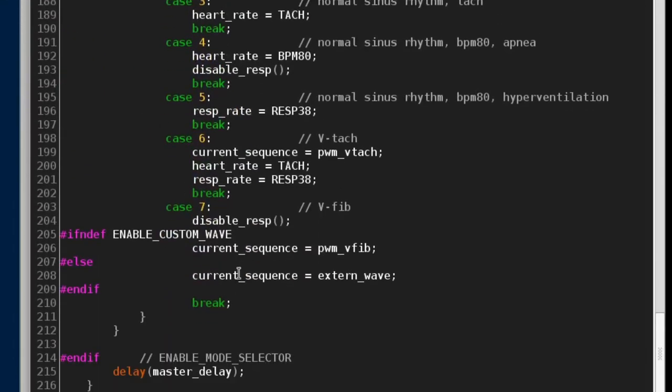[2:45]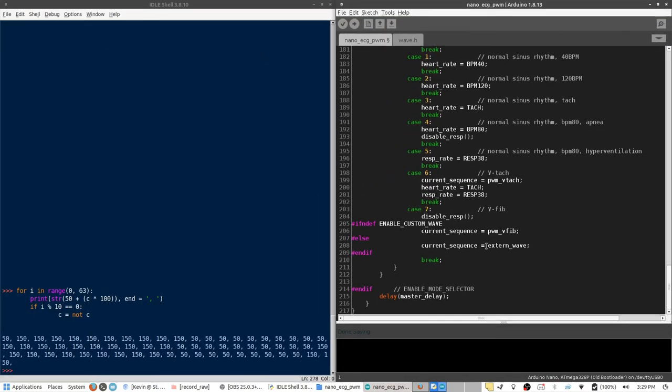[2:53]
Now I'm going to save this file, and I'm going to switch back over to the nano ECG PWM source file. Scrolling up to the top, you can see this header switch up here, which says define enable custom wave. Right now it's commented out. What we want to do is remove the comment, which is just removing the two forward slashes. So now we've activated this header switch. And what that will do is enable certain parts of the code, which will insert the custom waveform as the seventh case in the selection switches. So instead of it defaulting to VFib, it will default to our external waveform.
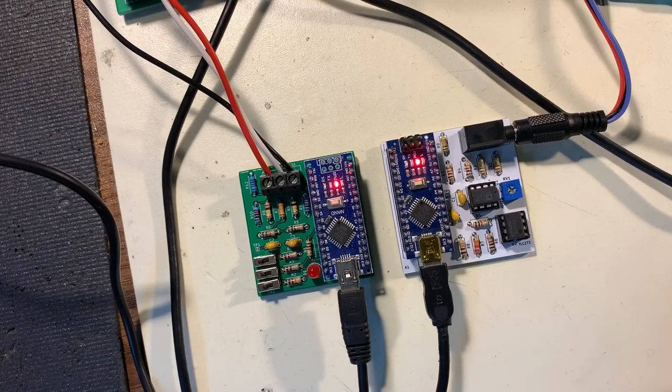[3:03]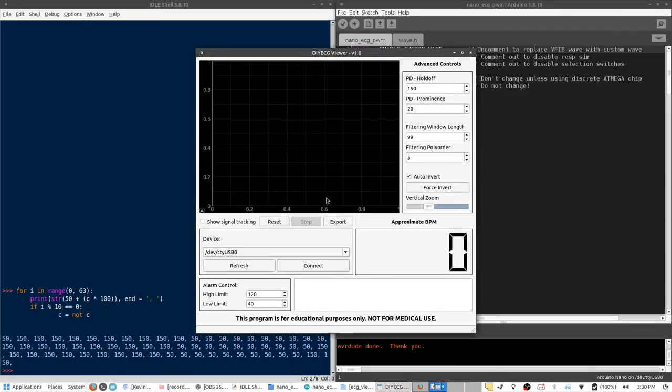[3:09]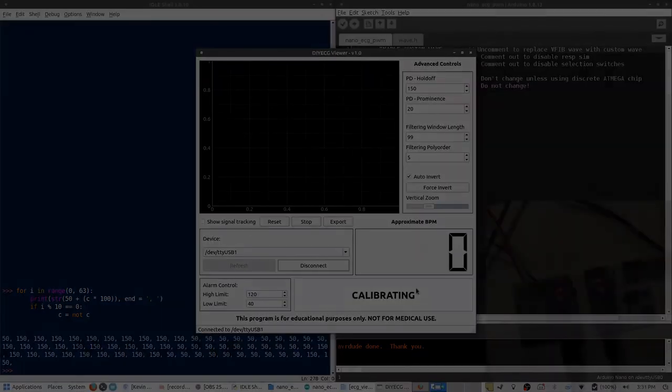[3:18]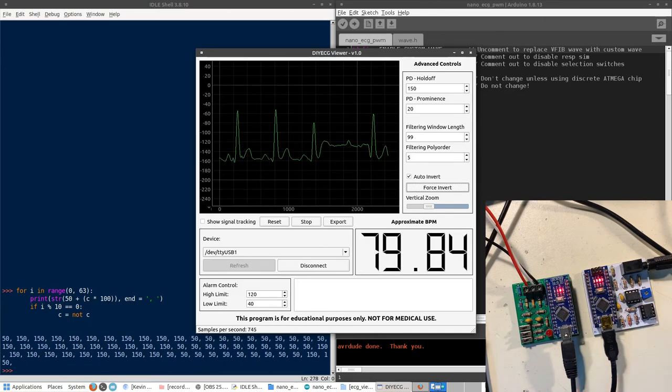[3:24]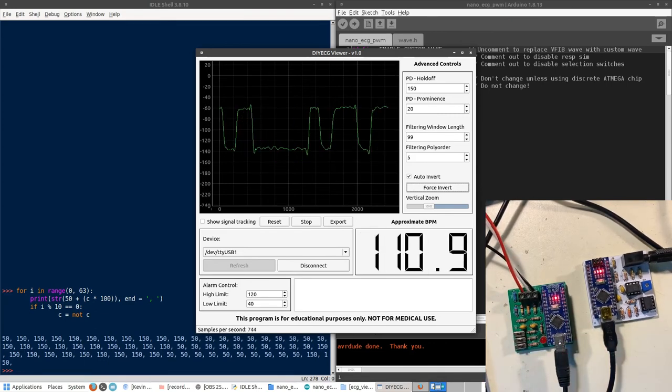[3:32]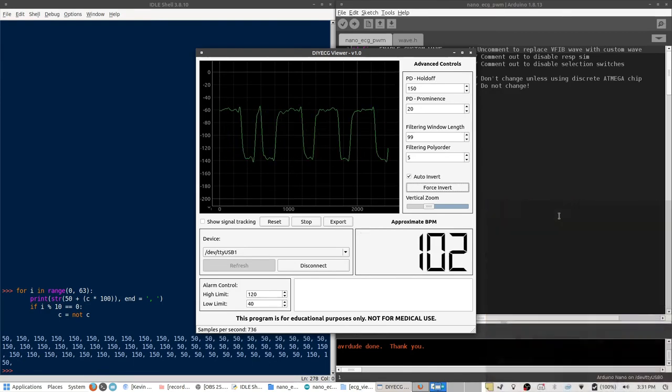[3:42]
So now I'm making sure that all the options for the Arduino are correct. I'm going to go ahead and upload. Now, right now I have the simulator hooked up to the ECG sensor board. So when I open up the ECG viewer, I can connect to the sensor board. And we can see here that the simulator is right now just doing a normal sinus rhythm. But since we replaced the VFib case with our own custom waveform, if we flip all the switches up, it now shows a sort of a square wave. The reason it's not a perfect square wave is due to the filtering on the sensor board.
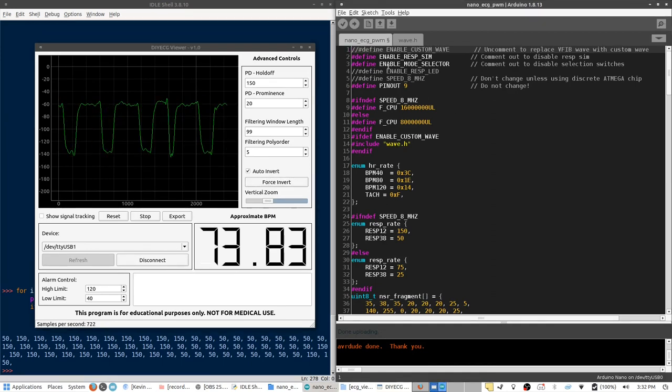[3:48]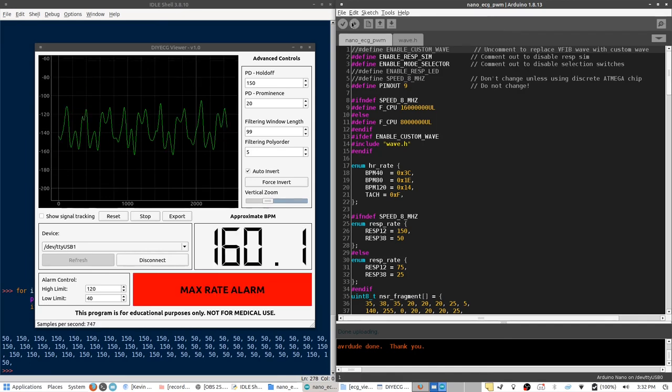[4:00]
Now to disable the custom wave, we just have to go back up to the first line and comment that out, and then re-upload the sketch to the Arduino. And now you can see that it is returned back to VFib, which is the stock mode for case number 7.
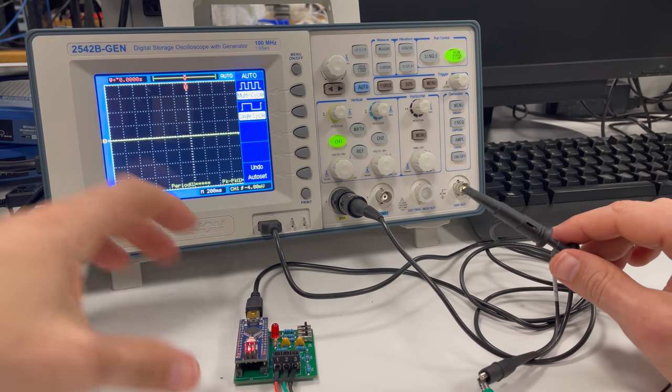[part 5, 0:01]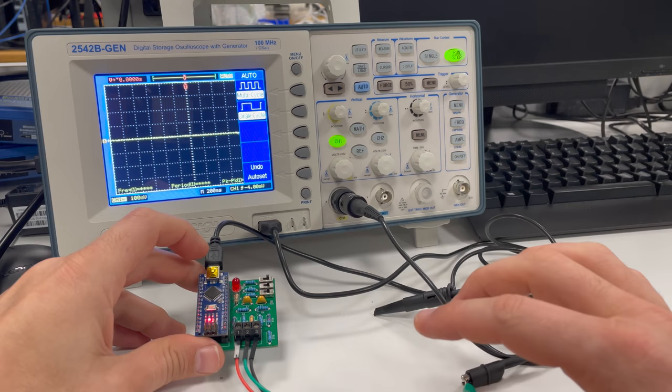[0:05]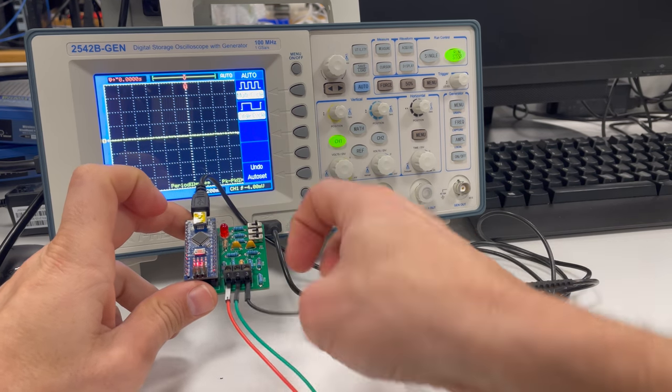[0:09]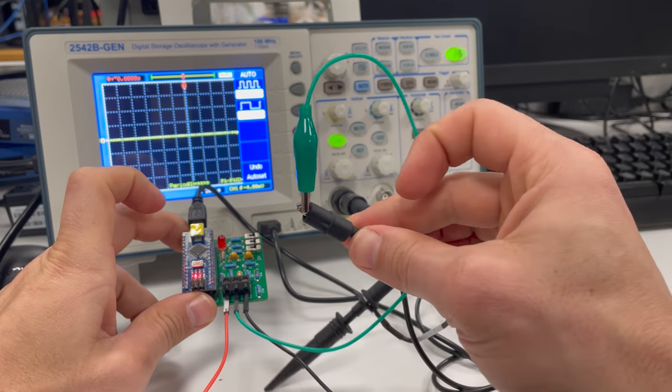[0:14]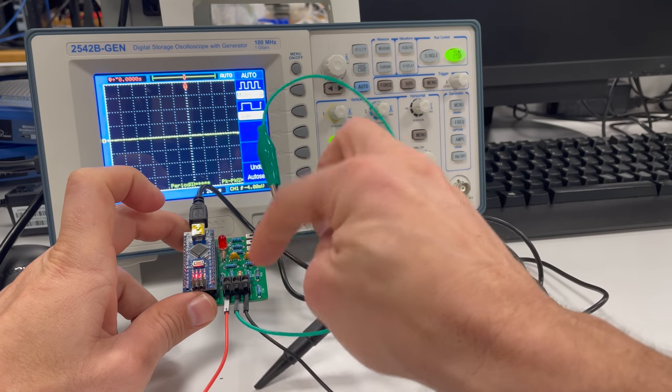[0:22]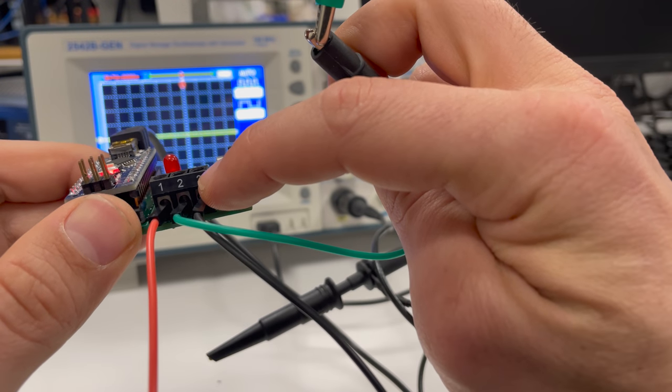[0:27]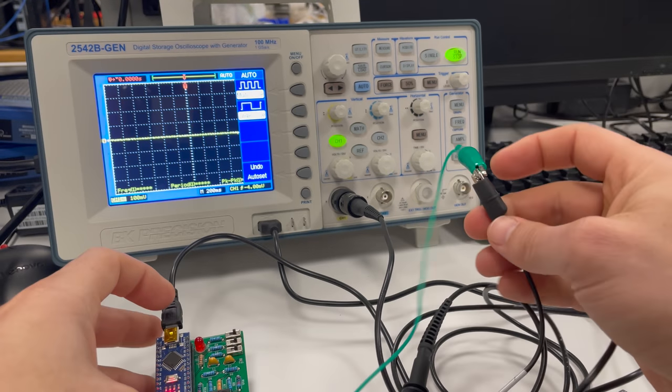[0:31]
Okay, so if you want to hook up the ECG simulator to an oscope, here's what you have to do. You want to find the middle screw terminal here. In this case, it's my green wire. And you're going to connect that to the ground alligator clip of your oscope. Right, so the alligator clip on your oscope probe is going to go to the middle terminal. In this case, what's labeled screw terminal 2 on this particular version of the ECG simulator.
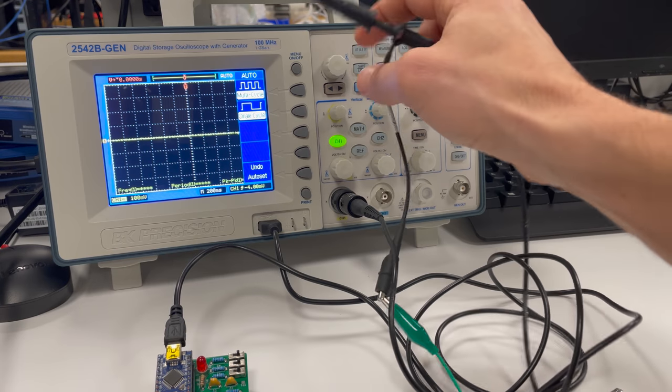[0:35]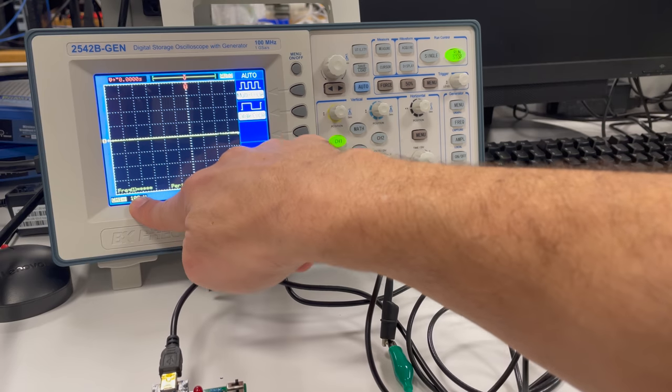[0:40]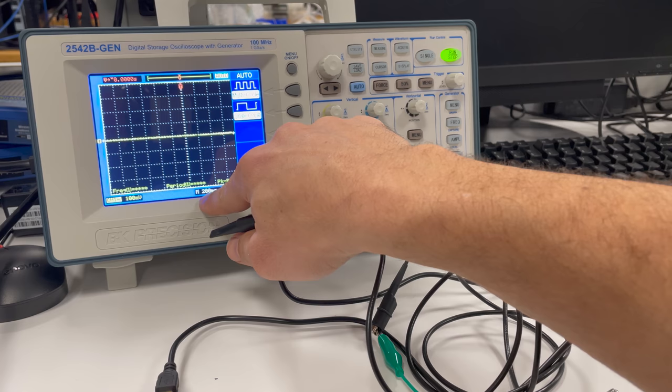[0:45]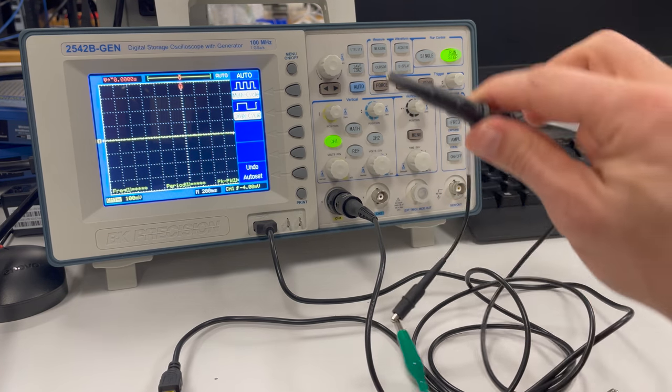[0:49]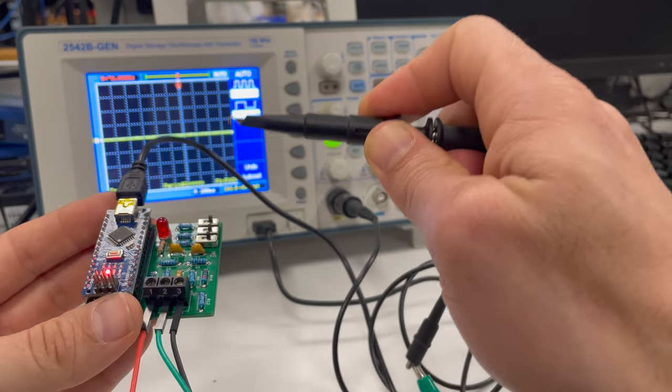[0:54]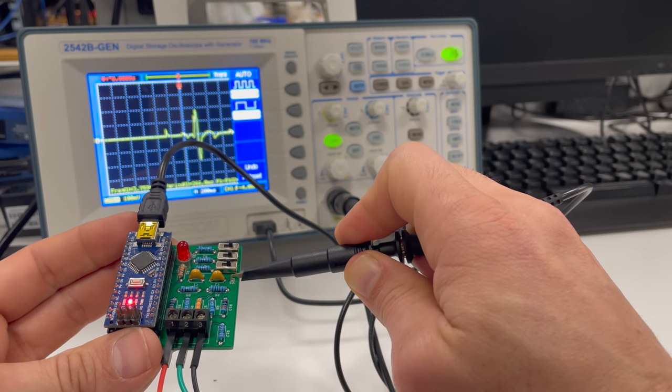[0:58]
So once you've grounded your oscope probe on channel 1, I got channel 1 right here, channel 1 settings, you can see I'm at 100 millivolt per division and 200 millisecond time interval. And so what you're going to do is take your board and take the probe of your oscope and connect it to TP1 on the ECG simulator. And you can see your ECG waveform show up right there.
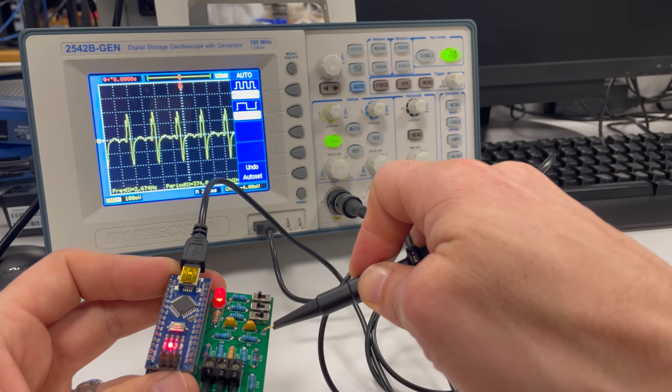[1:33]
Depending on your probe settings and compensation and the attenuation you have on your probe, you may get a slightly different signal, but what you're viewing right there is the output of your ECG simulator. Go ahead and change some of the settings right there. So you can see my LED light has picked up. It's a little faster now. So we should see those ECG waveforms more frequently.
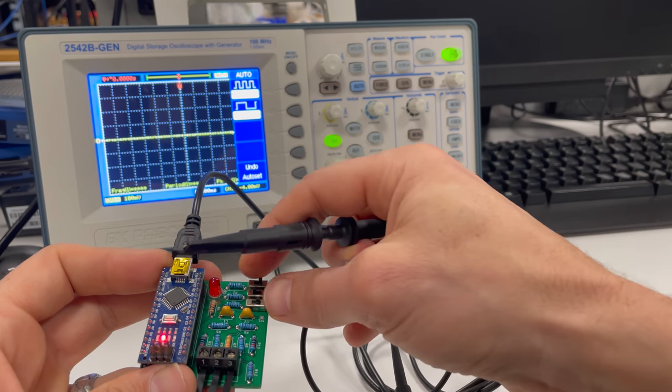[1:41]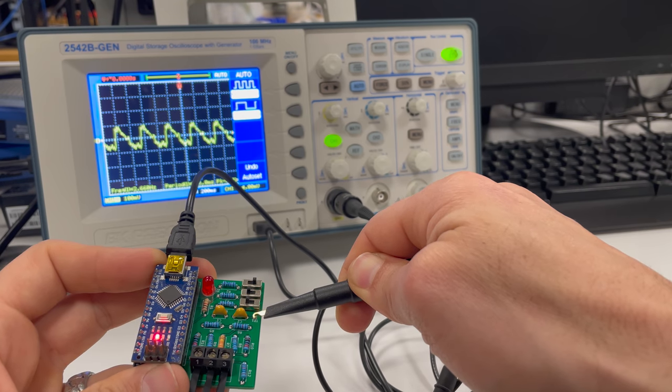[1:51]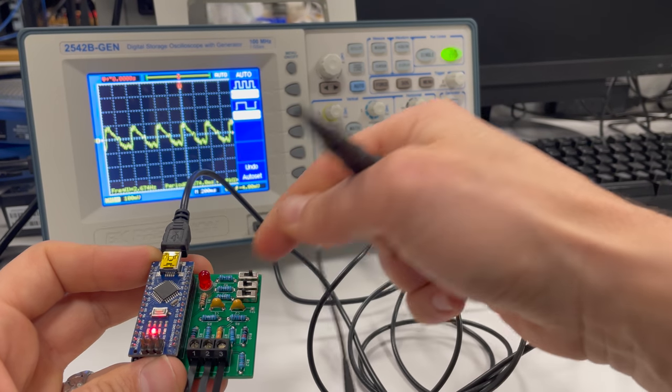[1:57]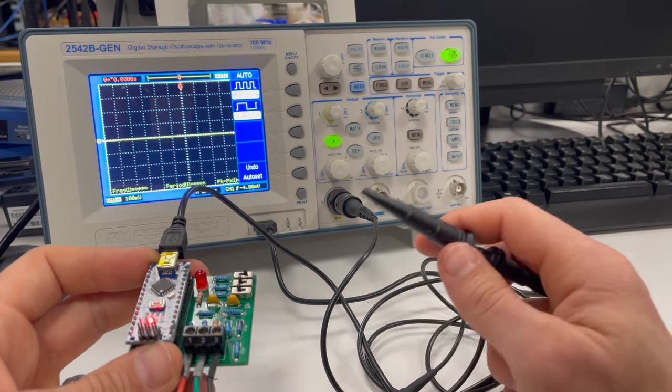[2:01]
Go ahead and change my settings again. Takes a second for the scope to update. Now you can see a different ECG waveform. And obviously you can keep playing around with the different settings. Make sure you measure your probe to TP1. That's going to be the easiest way to measure the output of your ECG simulator.